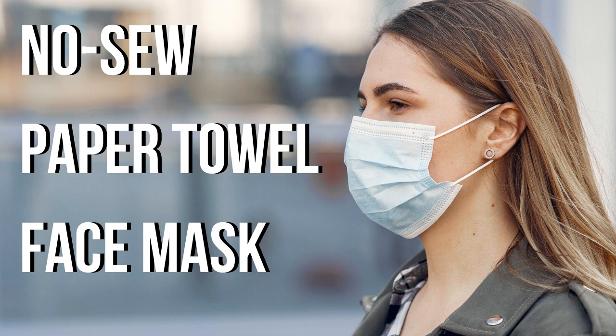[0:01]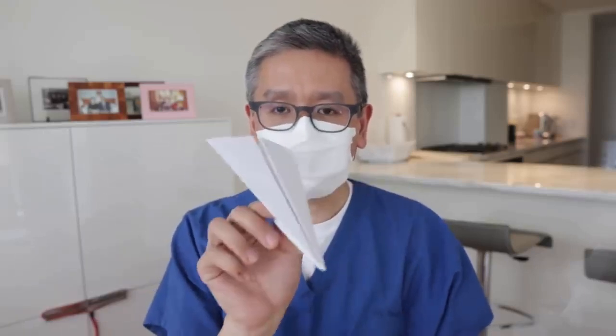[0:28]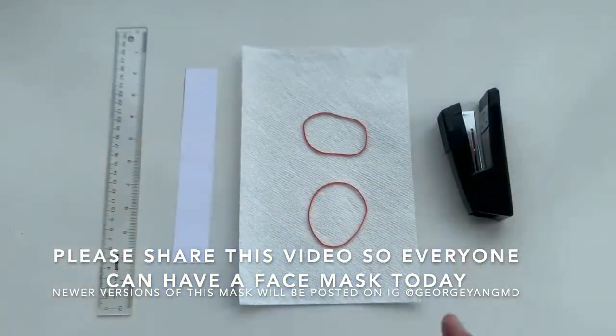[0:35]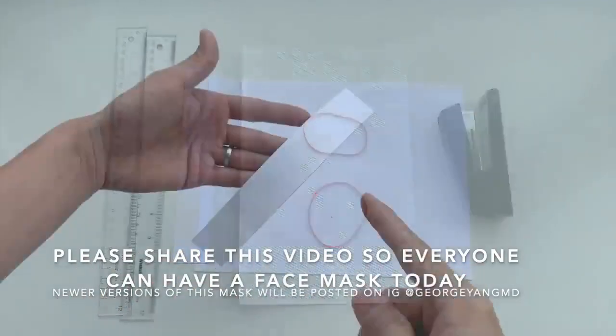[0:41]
In this video, I will show you how to make a structured disposable face mask using materials you already have at home. If you're able to make a classic paper airplane like this one, you should be able to make this non-medical face covering. What you'll need is a ruler, a strip of printer paper, 7-inch wide paper towel, 2 rubber bands, and a stapler.
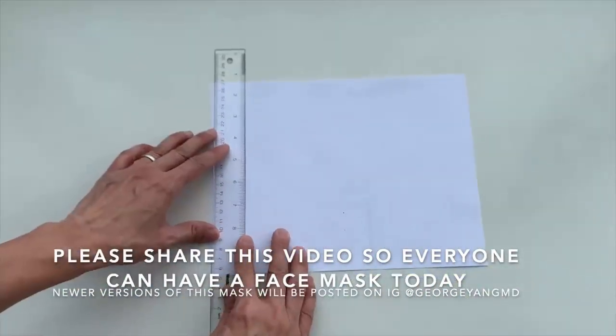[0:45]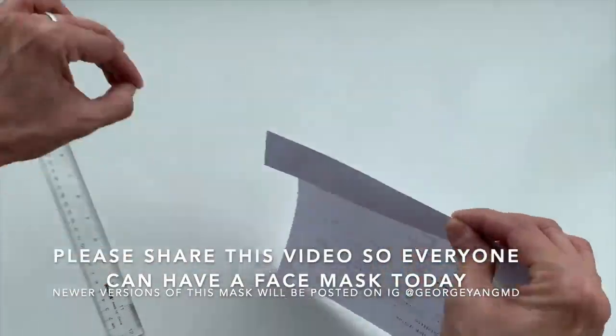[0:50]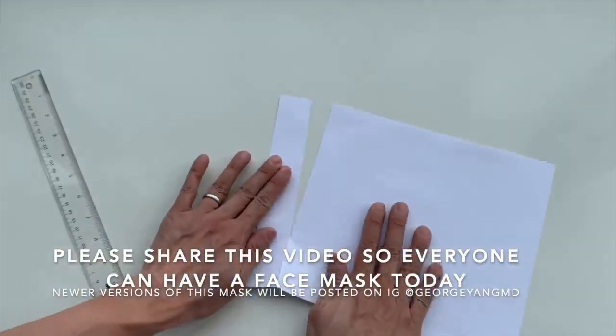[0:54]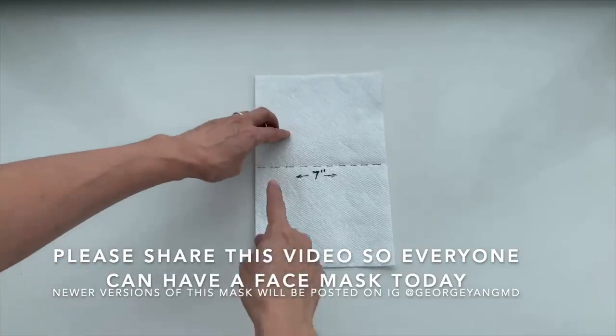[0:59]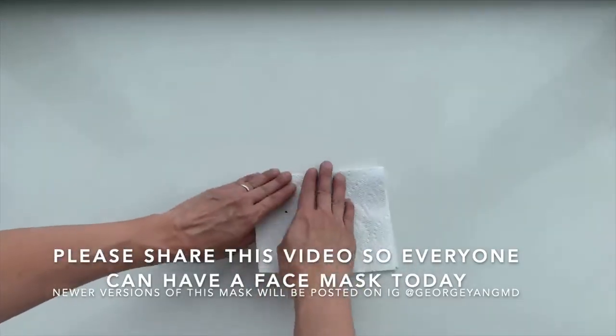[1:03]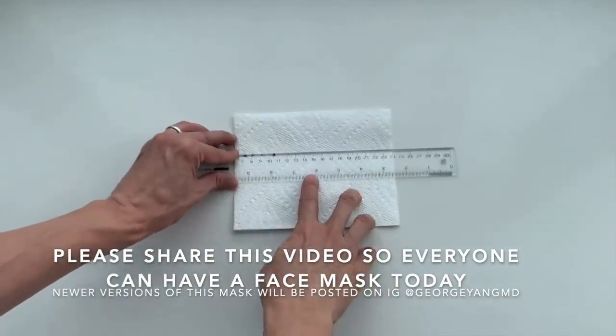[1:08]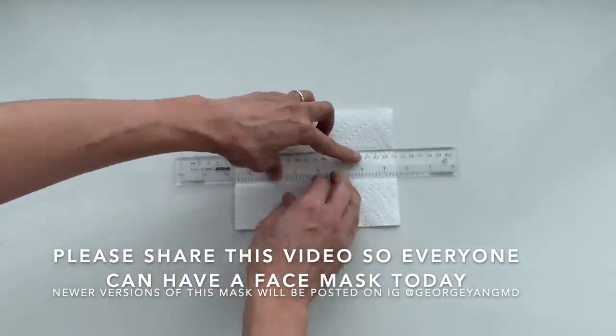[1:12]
To make the strip of printer paper, measure 1 3/8 inch and draw a straight line. You can cut it with scissors or crease it and tear it as demonstrated. Next, take the 7-inch wide paper towel, fold it in half from top to bottom. Next, take the ruler, center it on the paper towel, fold the top flap down and the bottom flap up, crease those to form a U shape.
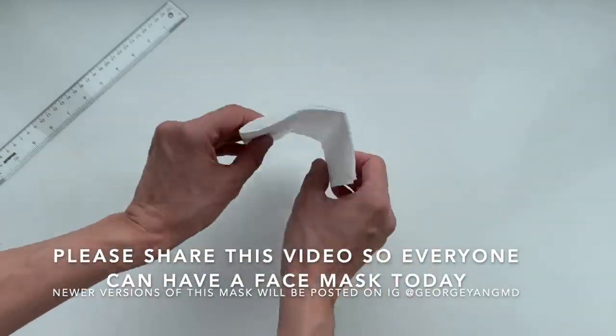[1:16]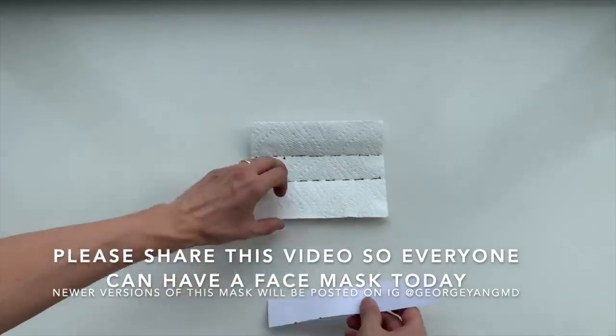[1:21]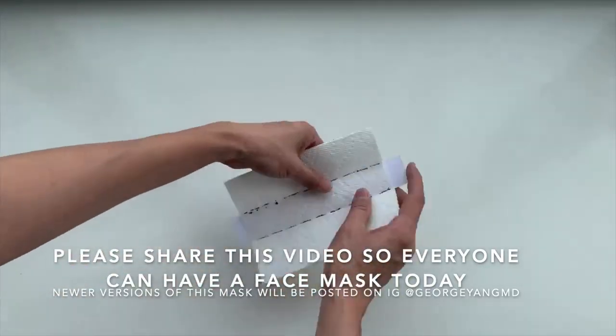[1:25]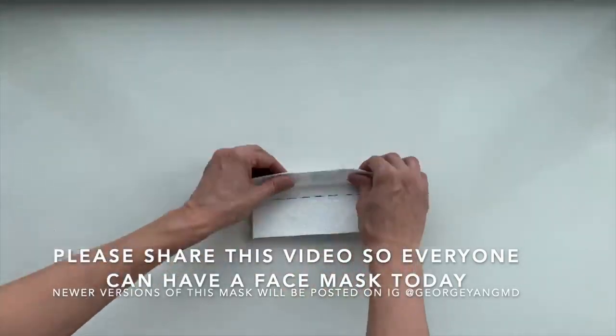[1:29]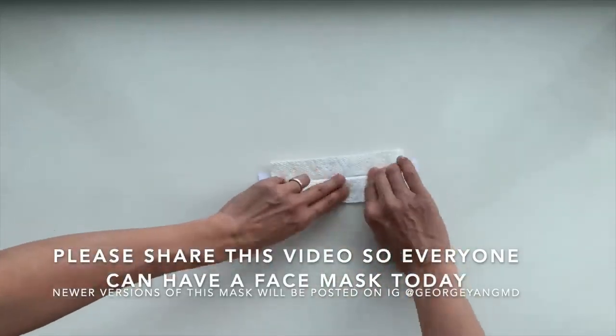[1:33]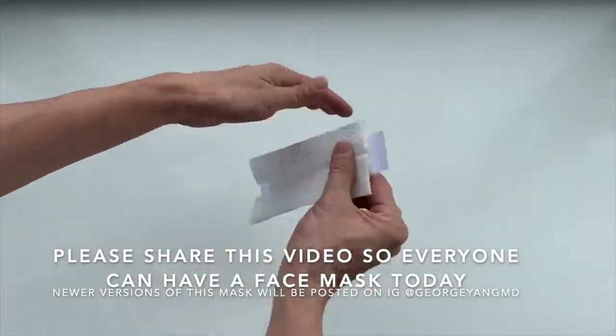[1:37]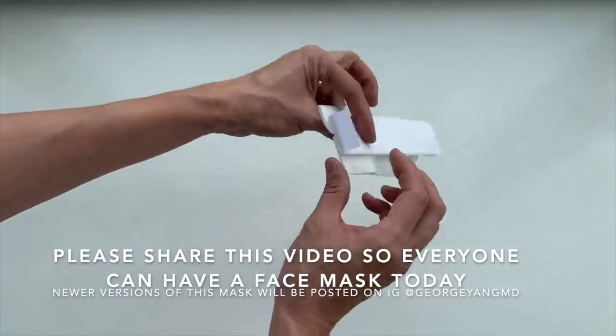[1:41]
Next, get the printer paper strip, which is 8.5 inches wide, center it on the paper towel. Now you're going to take the upper half of the paper towel, fold it so that the crease is centered on the mask. Now we're pretty much done. Just take the 2 tabs and fold it towards the front of the mask.
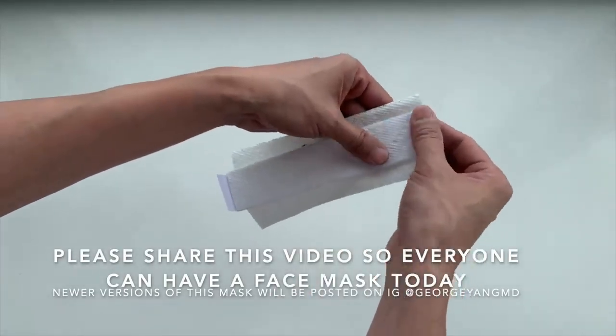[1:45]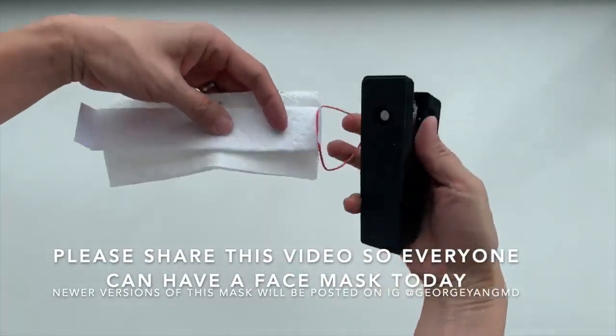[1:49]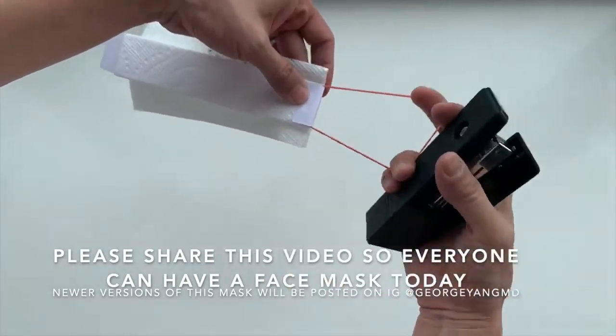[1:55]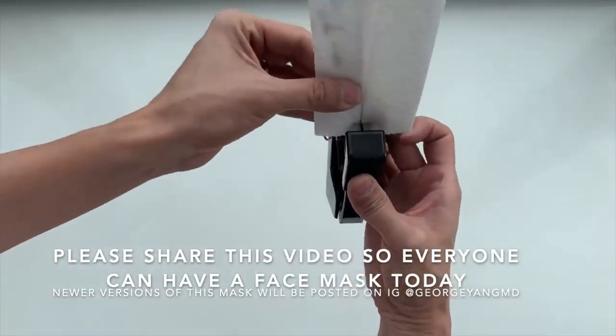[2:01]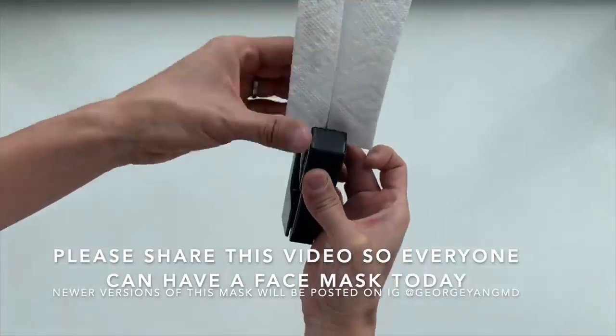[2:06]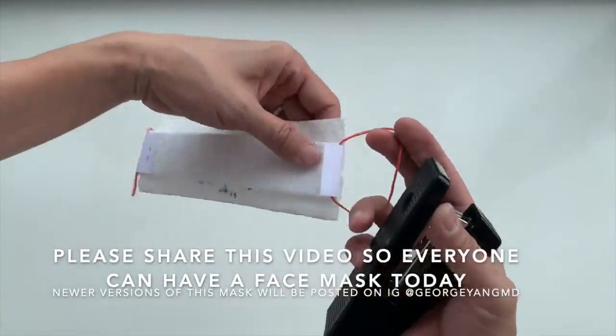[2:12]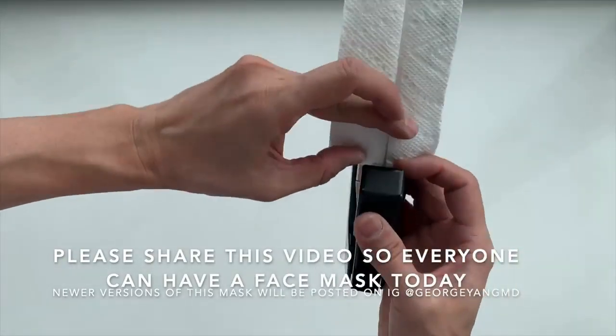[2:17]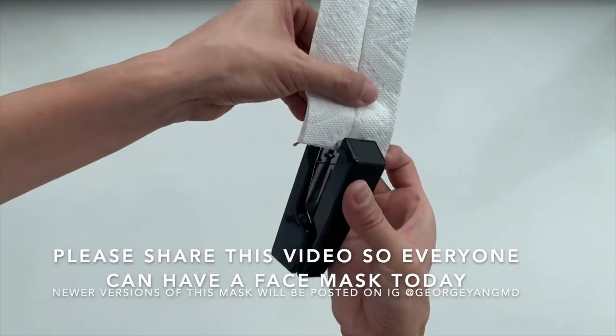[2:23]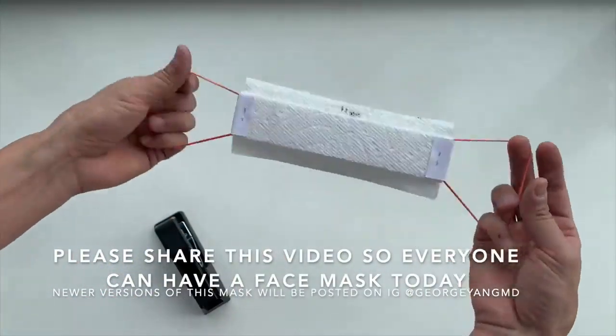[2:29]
Now we're going to hook the rubber band over the tab, fold the flap down, hold it down, and flip the mask so we're looking at the inside of the mask. Center the stapler across the middle of the seam and place a single staple through it. Repeat on the second side. With that staple, the mask is completed.
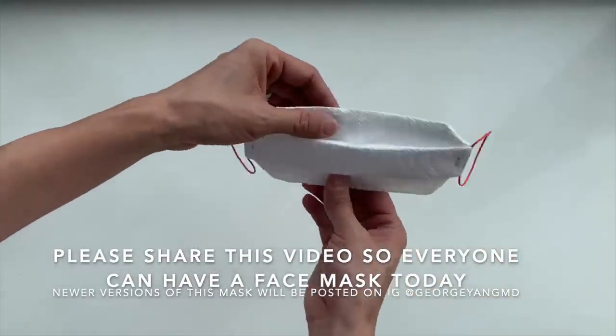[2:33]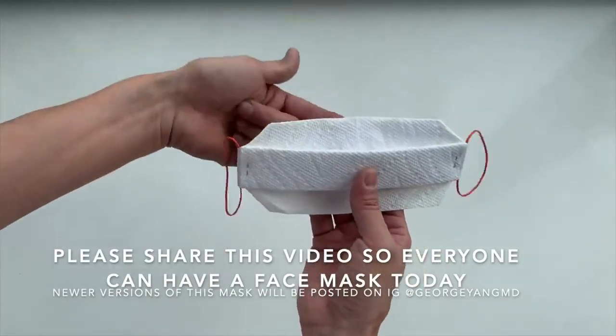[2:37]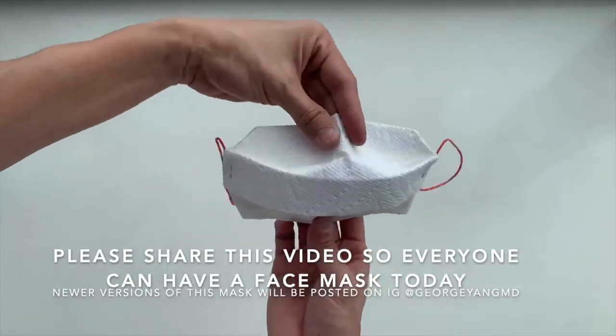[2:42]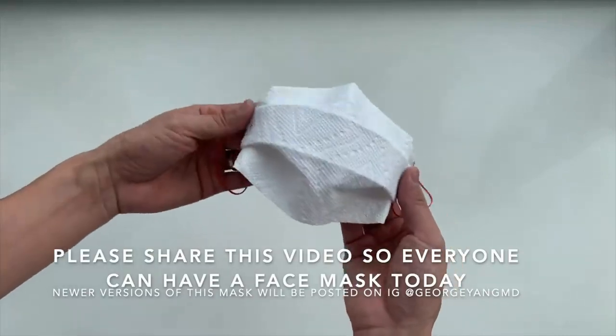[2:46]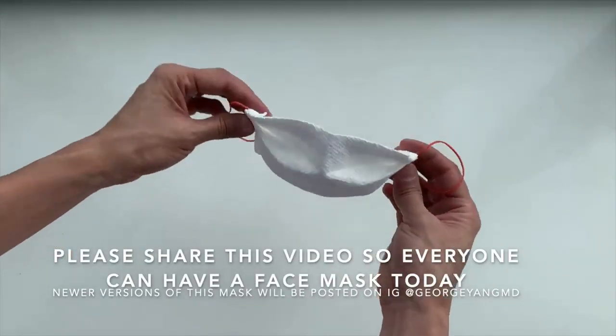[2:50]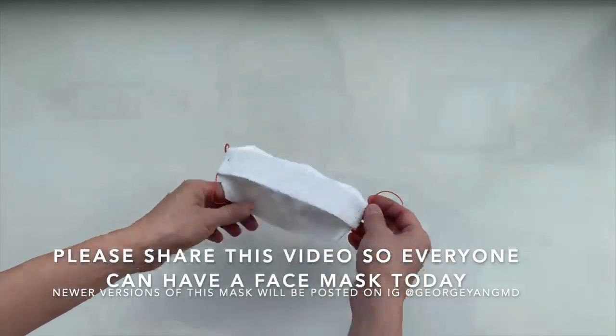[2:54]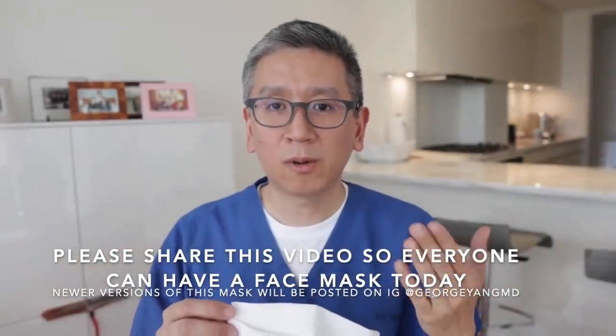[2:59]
To give it a cleaner look, you can fold each corner 45 degrees. The open side of the mask is the bottom. The folded side is the top, where your nose goes. When the mask is fully popped open, it creates a dome that's hexagon shaped. When you look at the top of the mask, you can see it is preformed to fit the shape of your nose. I wanted to go over my thought process when I was designing this particular mask.
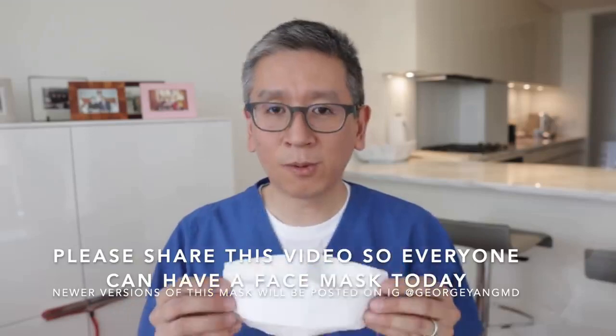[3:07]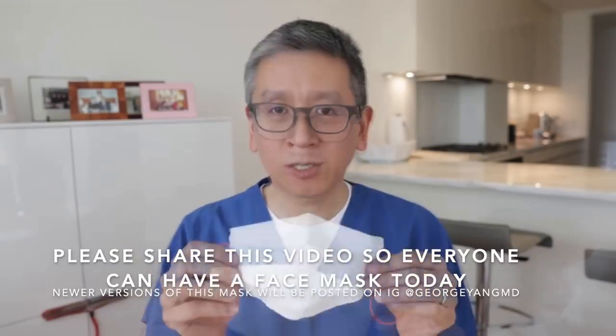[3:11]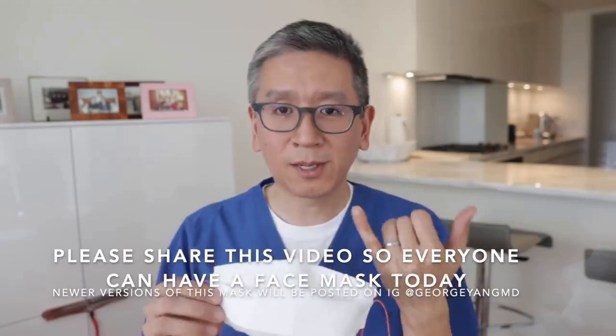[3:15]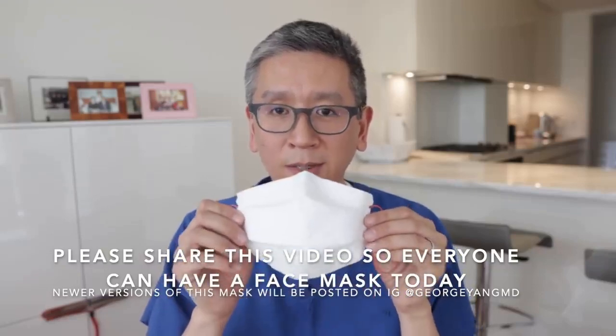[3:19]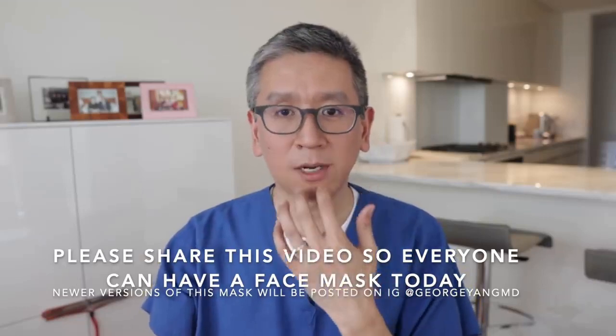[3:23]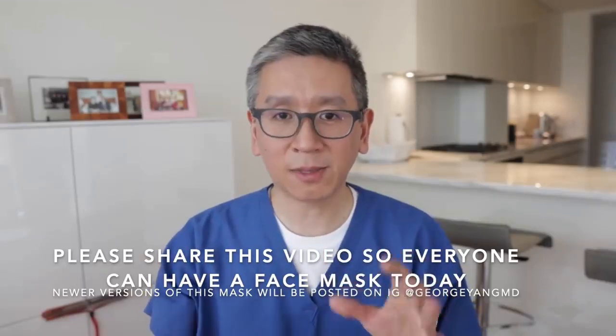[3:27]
It comes from both myself being a surgeon as well as a doctor. So we really need to put a mask in your hand today. Paper towels are everywhere, as well as printer paper. So that's number one. We need to get it in your hand. Number two, we need to teach you how to wear it properly. In order to wear a mask properly, you need to cover both the nose and the mouth. Anything that expels out of your nose and mouth has to be covered.
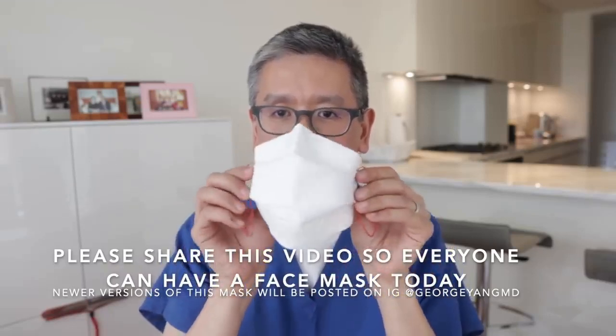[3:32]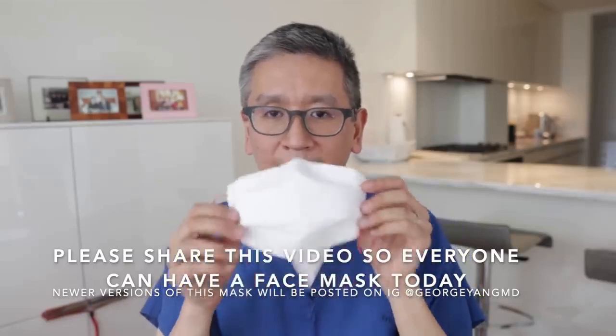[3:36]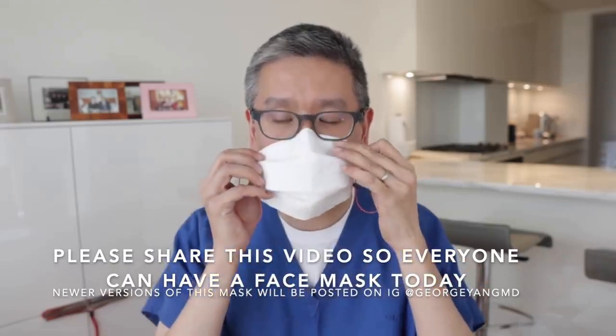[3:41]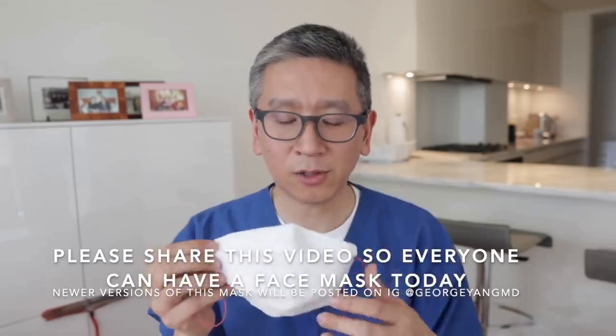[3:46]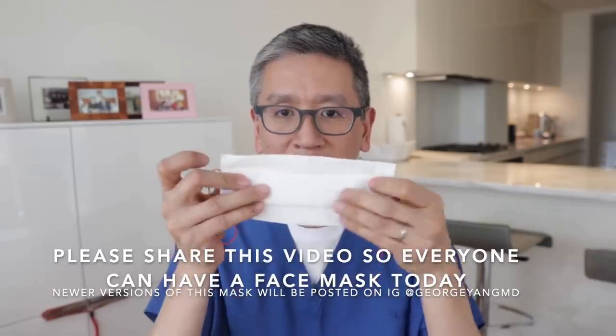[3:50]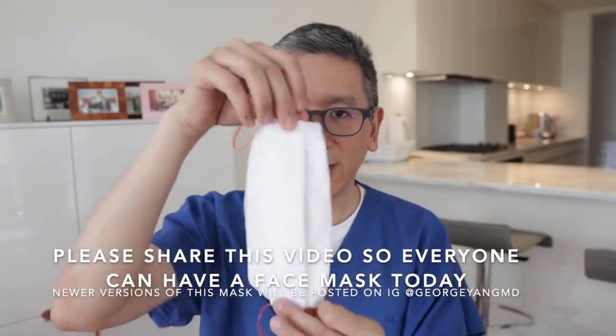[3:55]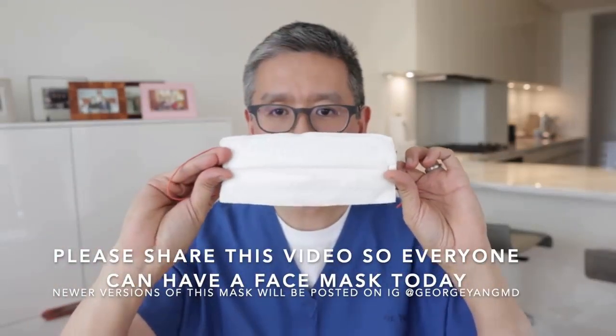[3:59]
So with a structured face mask, notice it sort of has a hexagon shape and it sort of holds this dome shape. That creates a little cup over your nose and mouth. So how do you turn a flat paper towel into a bowl? You need some kind of structure, so that's where the paper comes in. So the proper way to wear this face mask, I'll show you, is it's laying flat. You have the 2 ends. The folded end is on the inside, and this strip is on the outside.
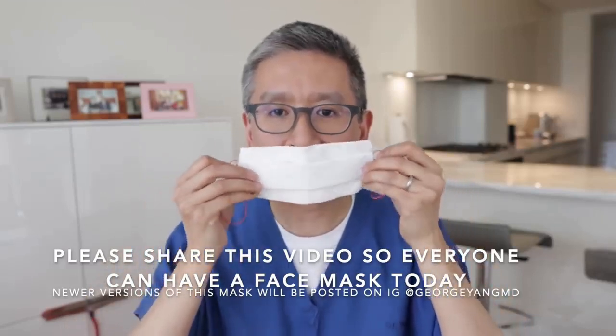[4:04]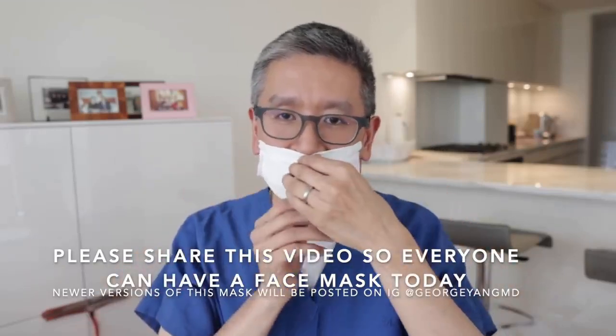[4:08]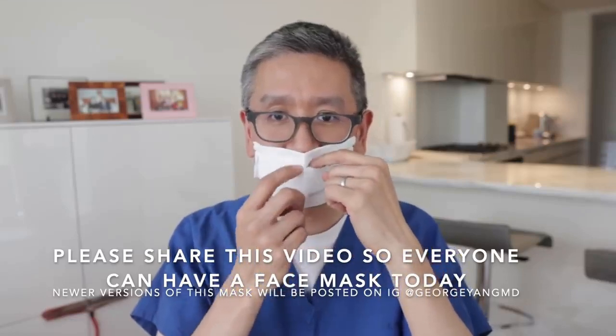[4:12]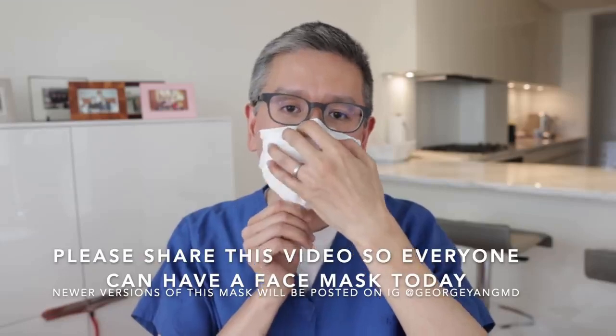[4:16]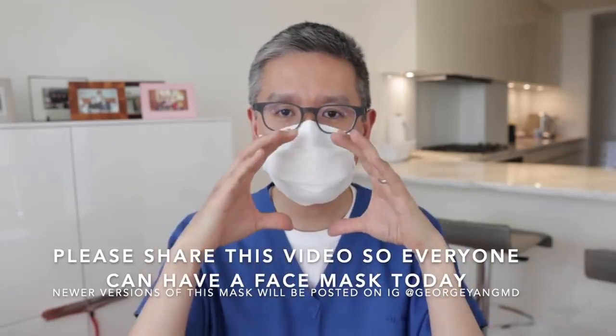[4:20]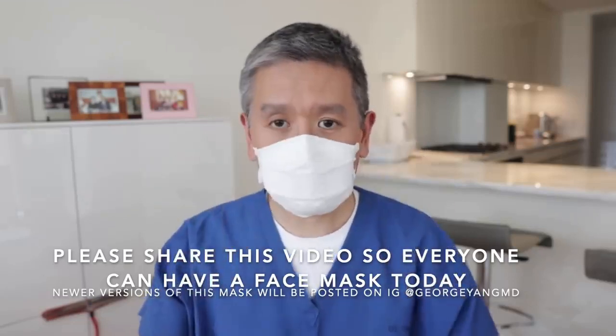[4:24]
You're going to hold it up against your lips, okay? Loop it over your ears, okay? But the key part is you have to pop open this fold right here in the bottom, okay? When you do that, this area gets longer and this area is shorter, so it creates this sort of bowl shape. I'll take my glasses off.
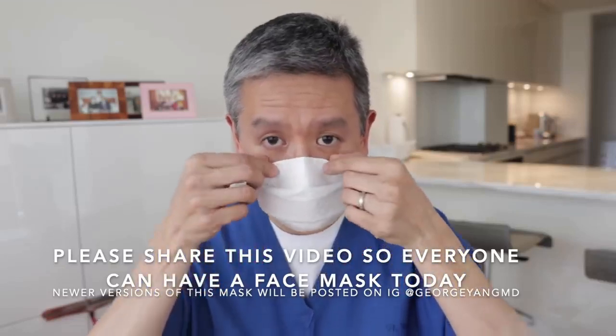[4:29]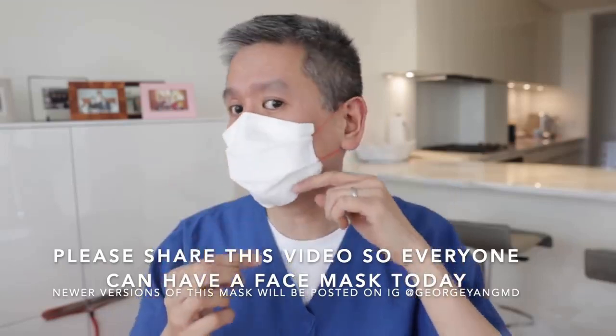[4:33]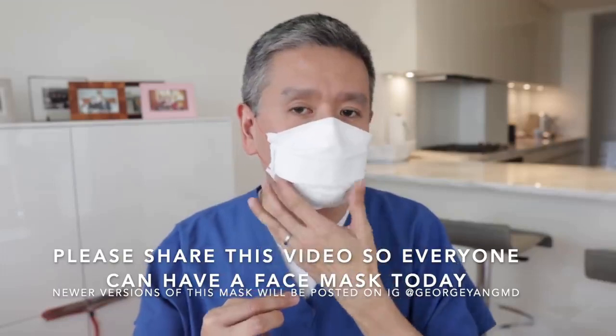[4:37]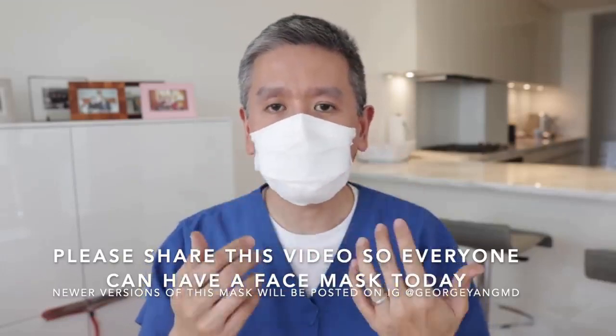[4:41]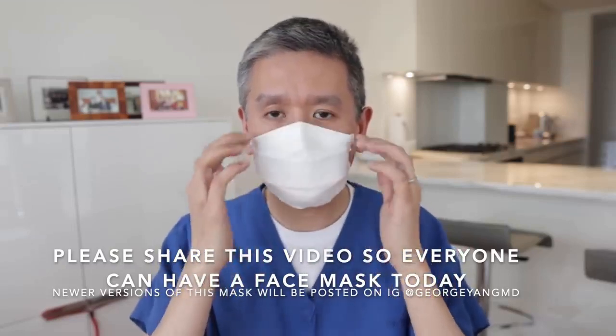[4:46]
Over here, this flat area, you press it up against your nose and it just kind of form fits right here. This strip right here actually press up against your chin. Doesn't have to wrap under the chin, but there's a little bit of compression here. It's not a perfect seal, but it definitely covers the nose and mouth well.
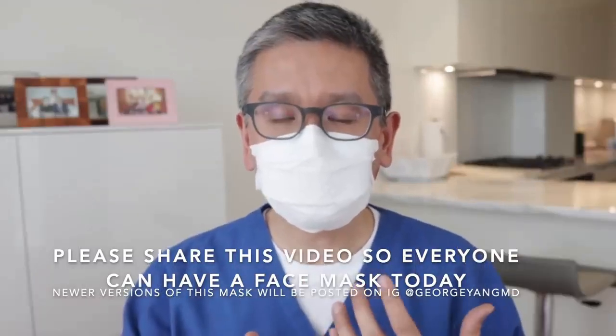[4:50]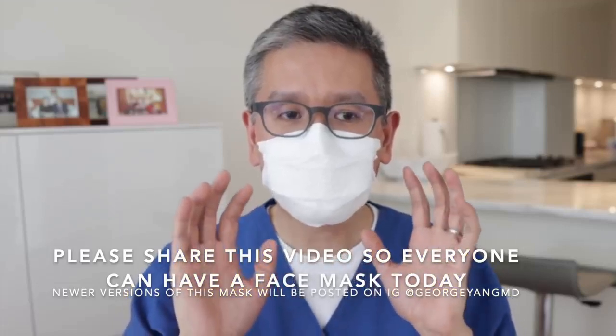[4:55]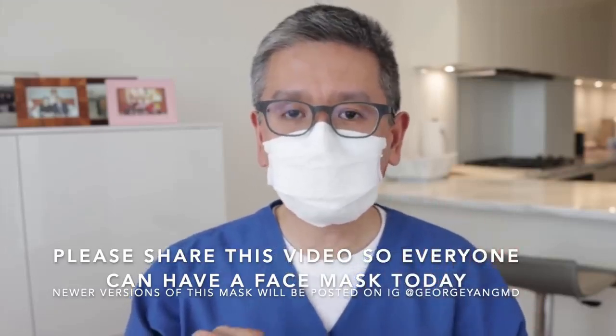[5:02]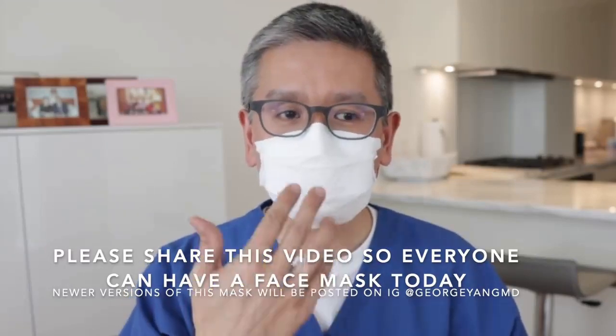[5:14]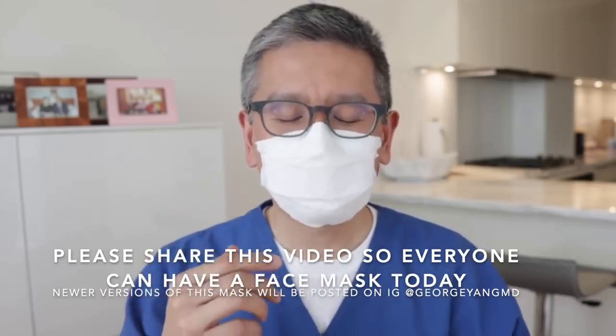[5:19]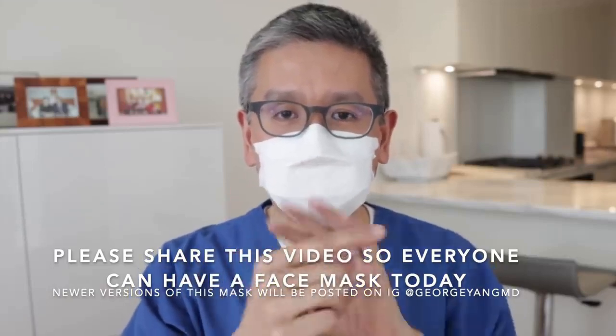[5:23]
So this should be enough as a non-medical face covering in order to catch any accidental sprays of droplets from a cough or a sneeze, or if you happen to touch a doorknob or shake someone's hand, which you shouldn't do, which has droplets. If you know you're not supposed to touch your nose and mouth, but you just, that 1%, you just forgot, and you just quickly rub your nose. This essentially blocked you. Okay.
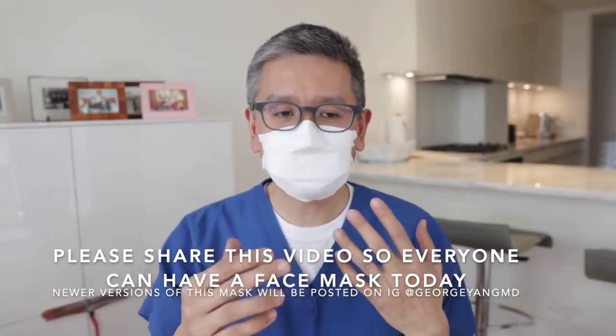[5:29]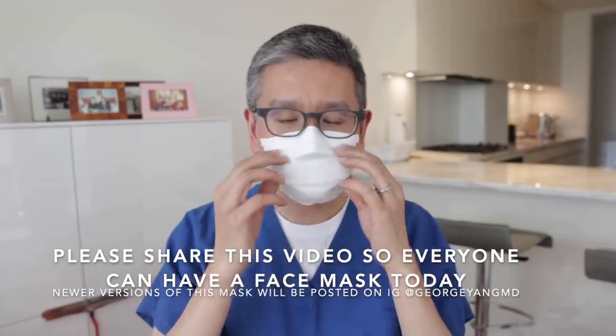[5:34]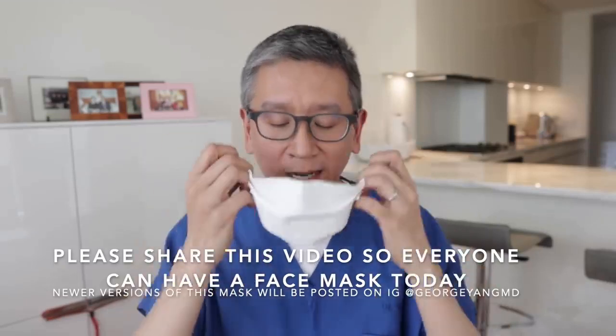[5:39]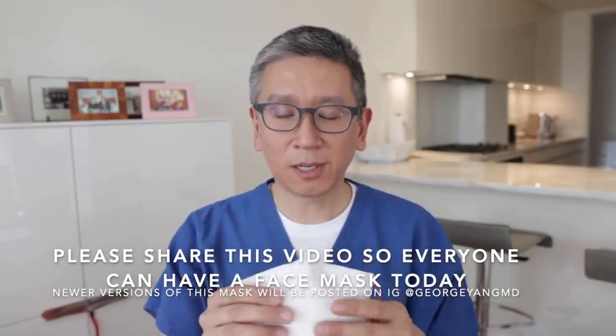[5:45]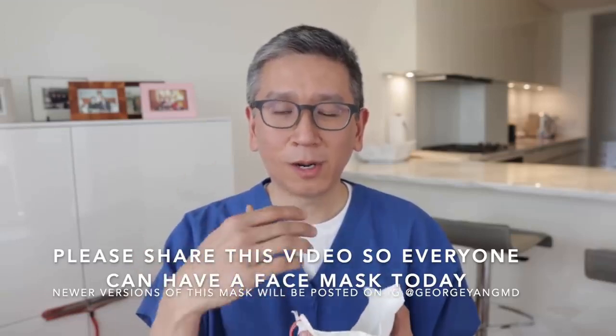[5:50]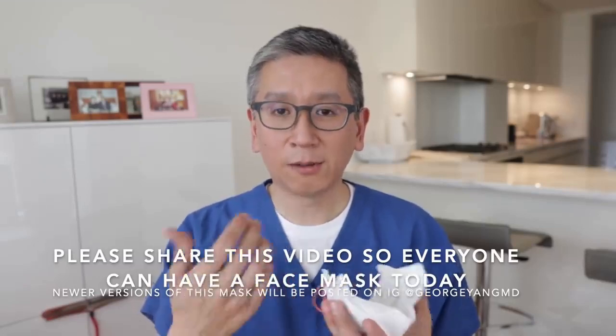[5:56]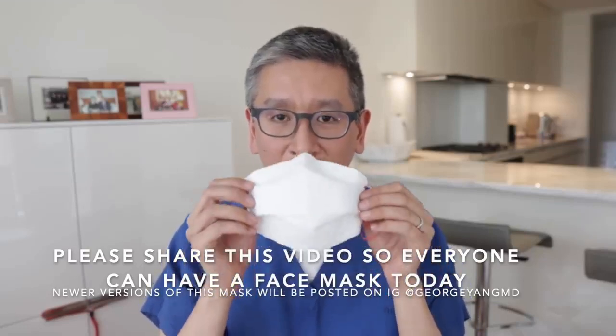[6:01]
It's not an N95 mask. It won't stop aerosols, but essentially we, in our culture, we're just touching our faces too much. Some studies say that we touch our face between 5 up to 28 times an hour. So imagine all those times that you potentially put yourself at risk. You may not have droplets with coronavirus every time, but one out of those 28 times that you touch your face and nose and mouth area, that might be the one. So this is why wearing something is better than nothing, okay?